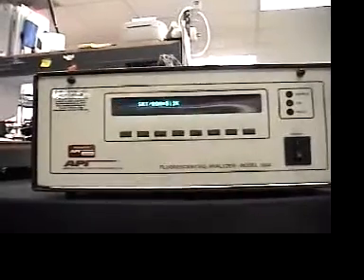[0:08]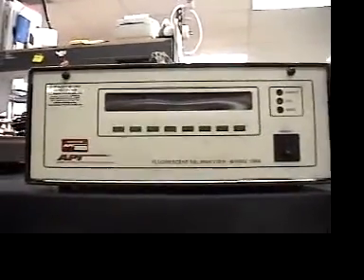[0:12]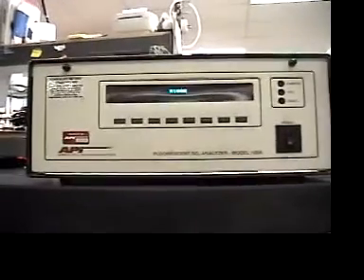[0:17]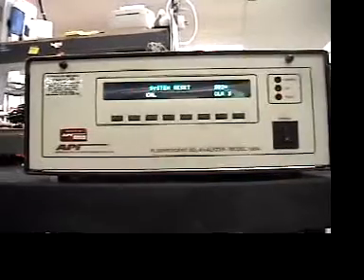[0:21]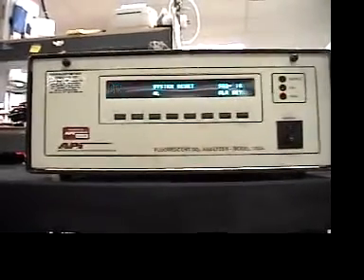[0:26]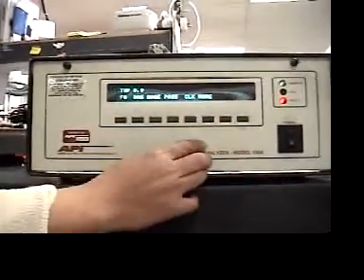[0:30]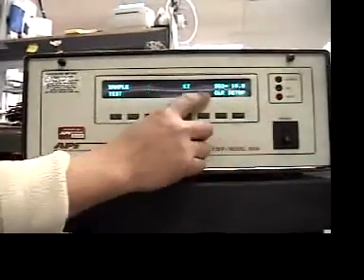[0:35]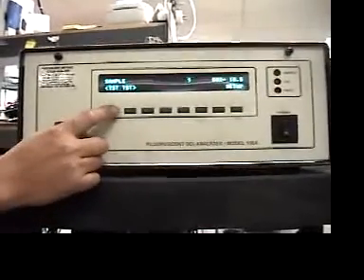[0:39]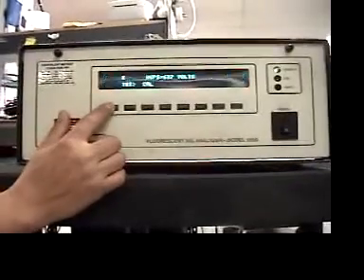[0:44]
Okay, so we just turned the unit on. It goes through its startup stuff. We just set up, now we put it to default, so we just clear and see what happens. This button goes circle around. Right, circle through.
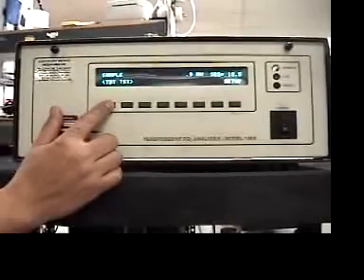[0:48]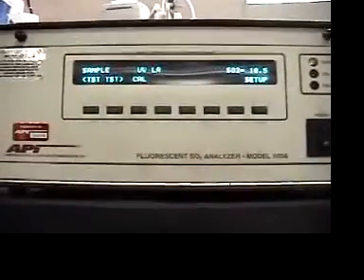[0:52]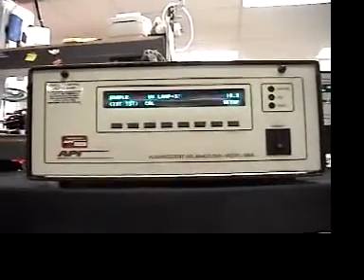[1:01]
Okay, so that's a UV lamp. When it gets under 1,000 or so, that's when you want to think about replacing it, correct? All right, good. So now you're going to show me how we remove, replace, and adjust the lamp, correct? All right, very good.
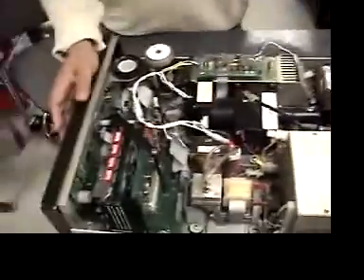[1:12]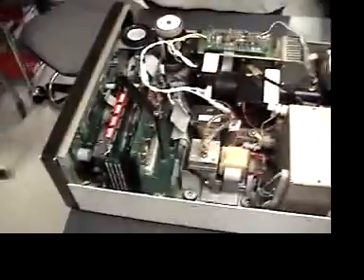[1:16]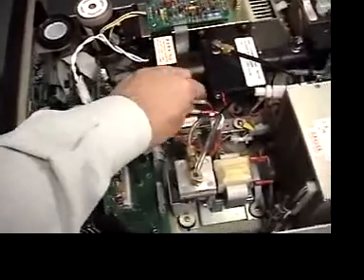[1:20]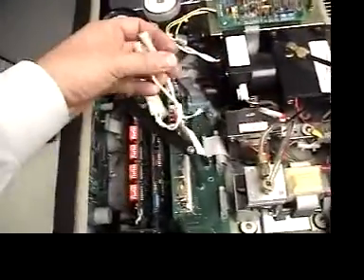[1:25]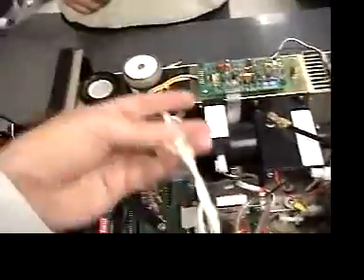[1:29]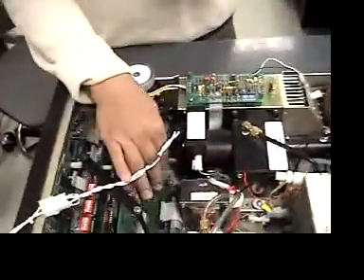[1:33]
Step number 1, unplug the unit from AC power. Step number 2, remove the top cover. Step number 3, unplug this connector, the UV lamp connector. Is it marked in a certain way? Okay, I think it's obvious. So we want to remove that. Very good.
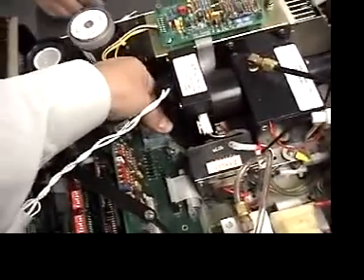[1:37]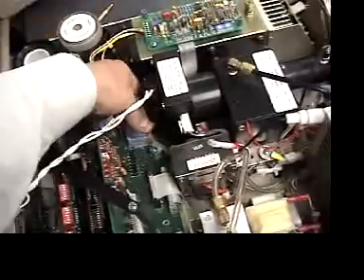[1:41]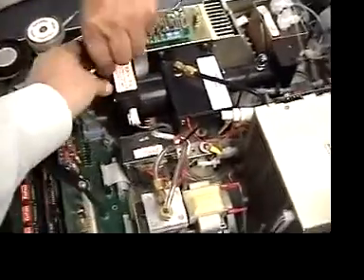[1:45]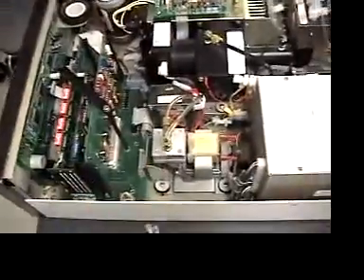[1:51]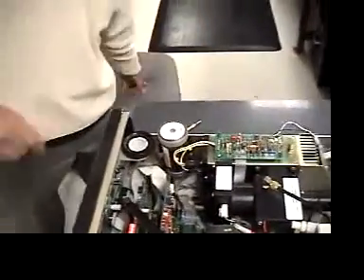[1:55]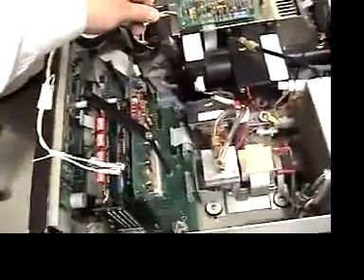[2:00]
Now we loosen the thumb screw down here. Just loose, that's good. Then we pull the lamp up. Very good. So now that's the old lamp. Now we put a new lamp in. Here's a new lamp. We put that in.
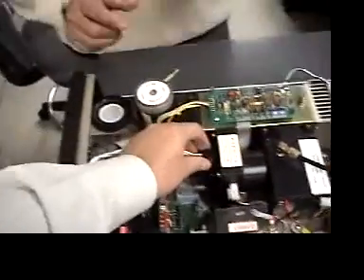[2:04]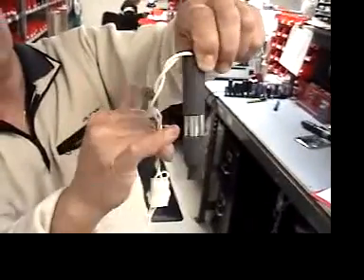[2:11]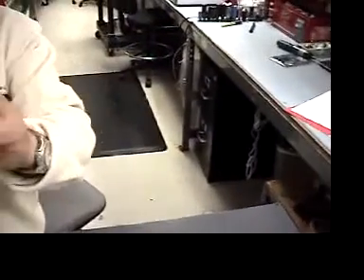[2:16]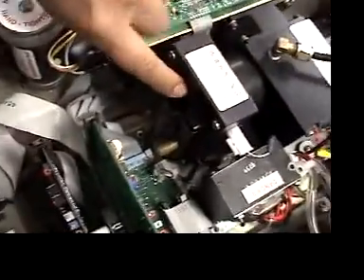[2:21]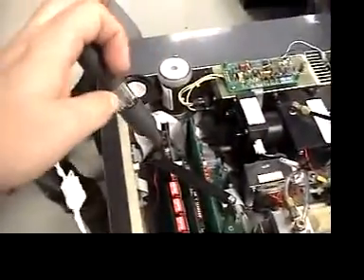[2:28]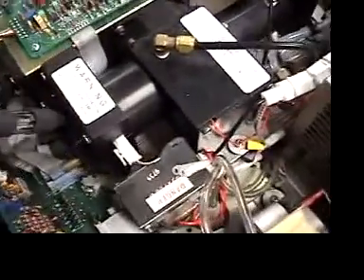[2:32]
Is there any particular orientation? Yes, you see the window for the lamp. It's right there. There's a window on two sides, back side and front side. We make sure the window is aligned. So we've got to align the window of the lamp with the window inside of the unit. That looks good.
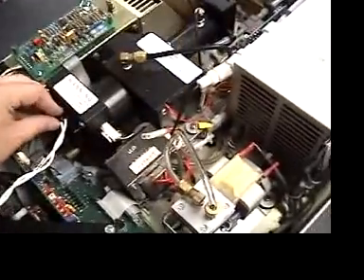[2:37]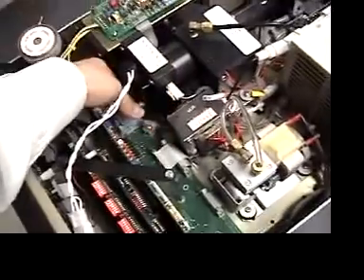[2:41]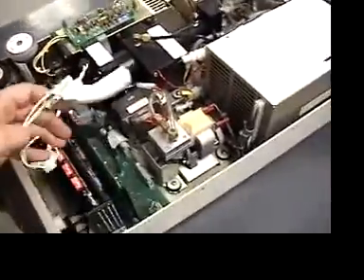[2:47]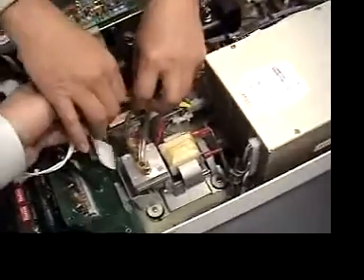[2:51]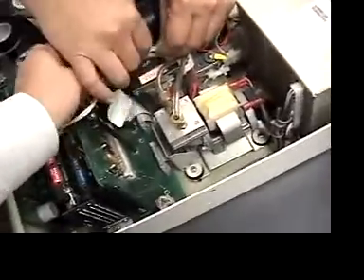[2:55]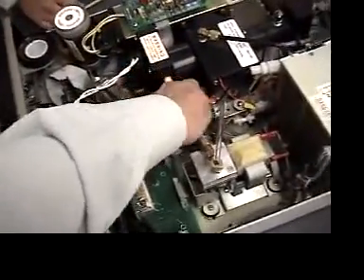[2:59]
Now we tighten the thumb screw. Just not too tight, just finger tight. Very good. Now we reconnect this connector. Does this go any particular way? It doesn't matter, it goes either way. No orientation on that connector. Very good. Now we reconnect the AC power.
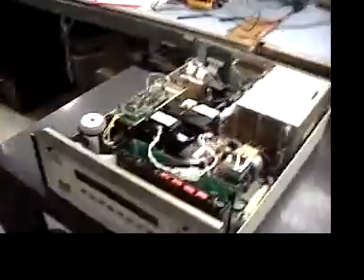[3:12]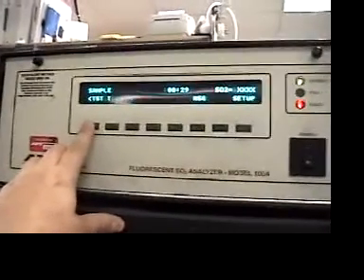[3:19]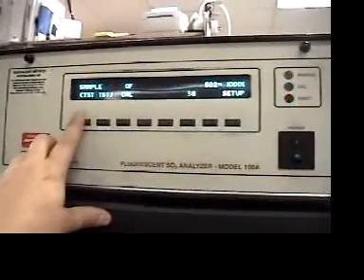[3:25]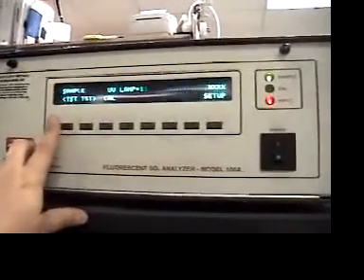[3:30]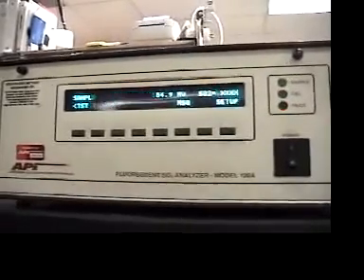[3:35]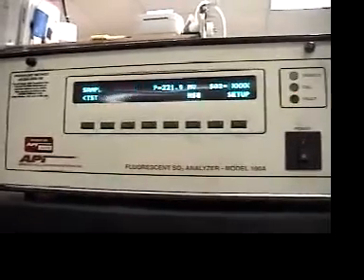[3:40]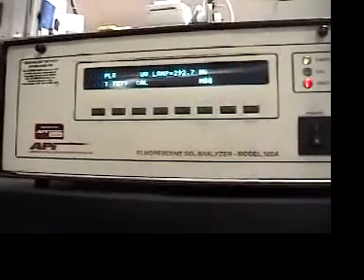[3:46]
Now we turn the unit back on. Now we circle through the test menu and we look for the UV lamp. Right there. Right now it's reading 120 or 140 millivolts and it's increasing, so the lamp is warming up. How long does it usually take for the lamp to warm up? Probably 5 to 10 minutes.
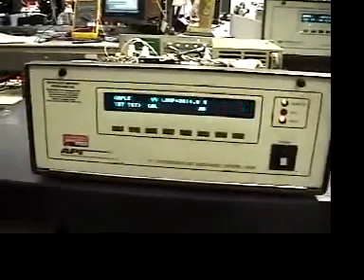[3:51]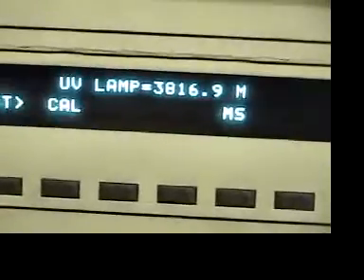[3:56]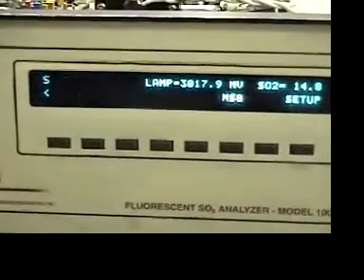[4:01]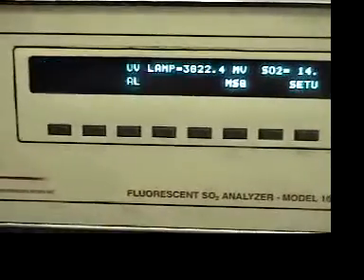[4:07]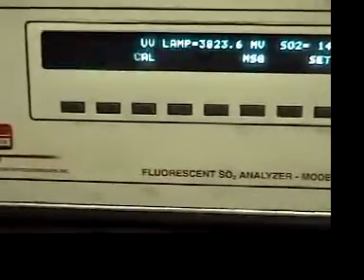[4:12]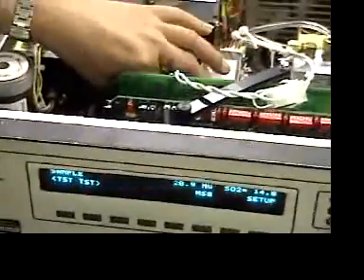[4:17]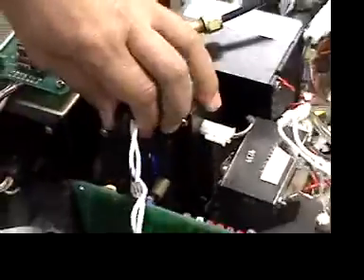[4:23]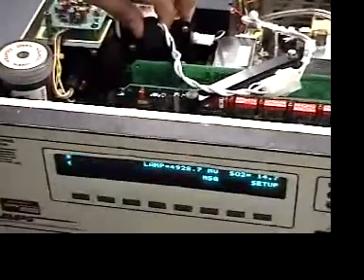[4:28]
After approximately 10 minutes or so, the UV lamp will be stable and warmed up. So what we want to do is adjust the UV lamp position to reach as high a signal as you can, the maximum possible signal. Loosen the thumb screw slightly and move the UV lamp around, up and down, side to side, to get the max.
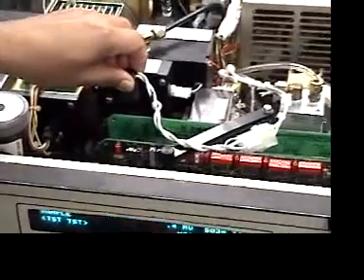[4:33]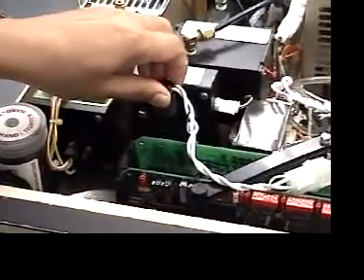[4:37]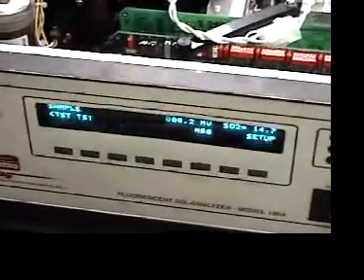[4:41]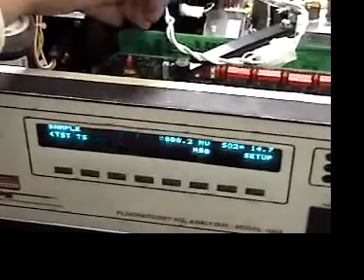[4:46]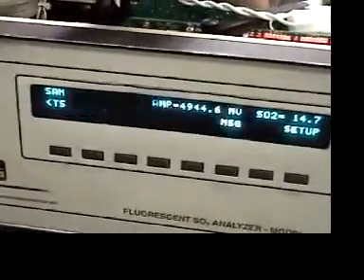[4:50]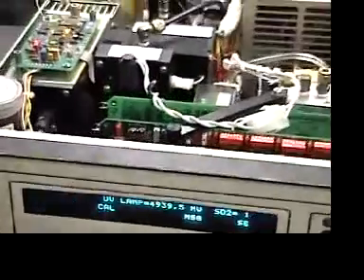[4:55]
Be careful not to expose your eyes to the UV lamp itself because that is harmful radiation. Then move it around and notice when the lamp is at the maximum level, and then tighten it down. You can see we started at 3,000 millivolts and now we're up to about 5,000 millivolts, a 5-volt signal coming out of the UV lamp. Very good.
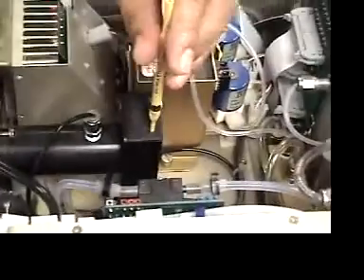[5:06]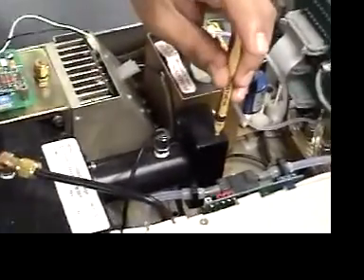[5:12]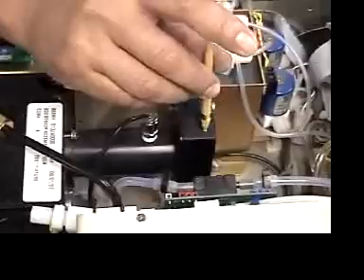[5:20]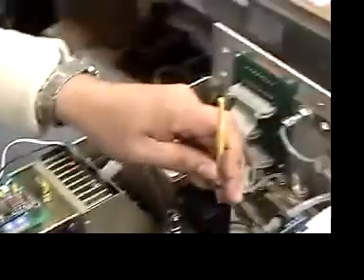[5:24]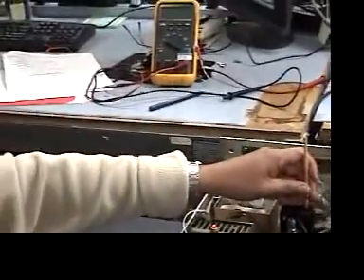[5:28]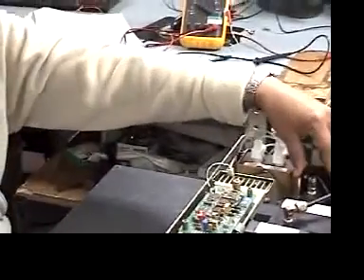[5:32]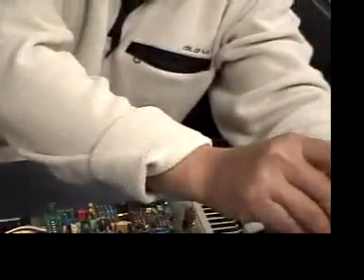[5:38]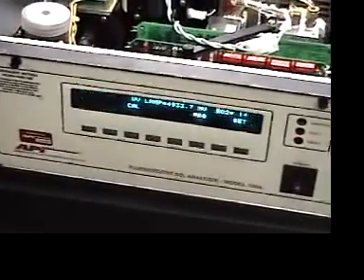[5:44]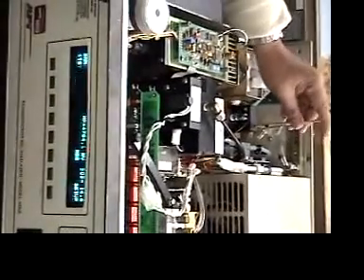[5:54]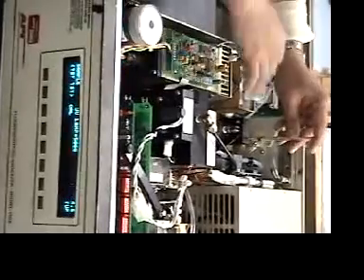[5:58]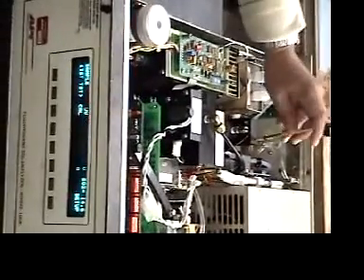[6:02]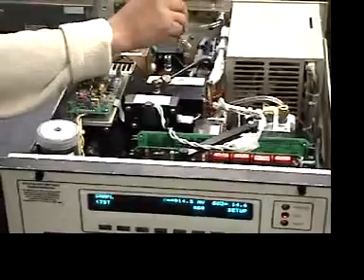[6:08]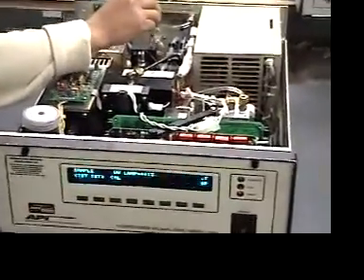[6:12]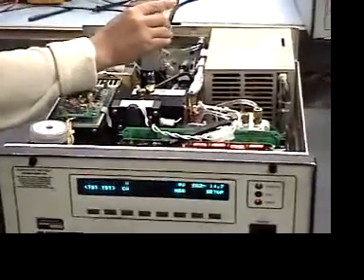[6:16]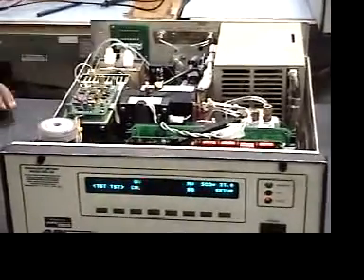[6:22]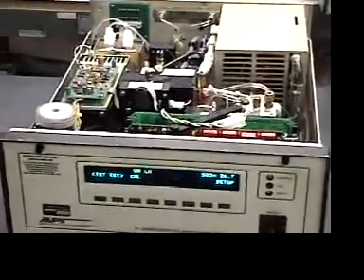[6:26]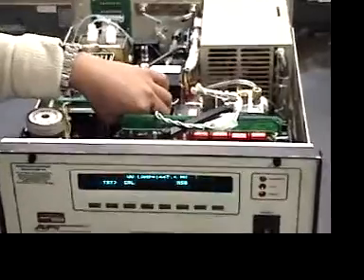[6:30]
Then after that you can adjust the detector part. I gotta lower this one to minimum. Then we try to adjust it and maximize again. You try to maximize again by making that adjustment. I got max on that one. Now I can adjust the lamp again, maybe I get more max on that.
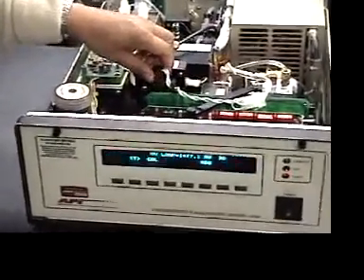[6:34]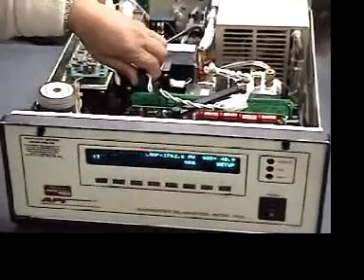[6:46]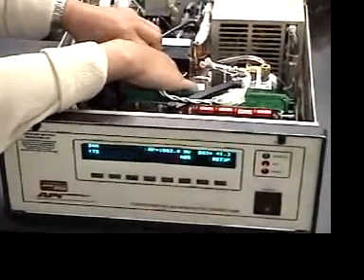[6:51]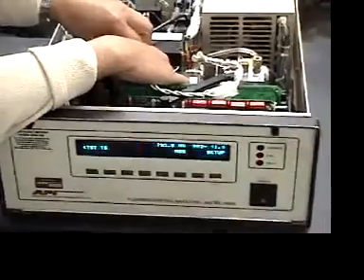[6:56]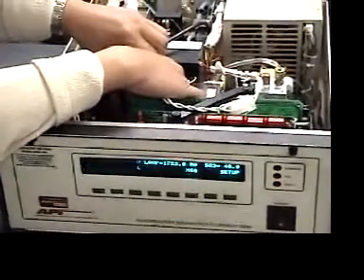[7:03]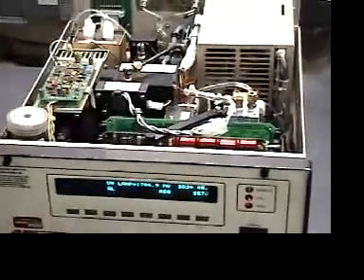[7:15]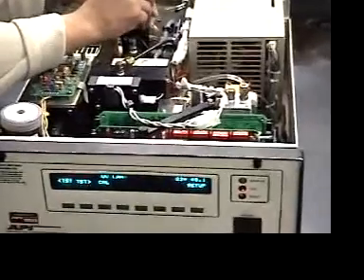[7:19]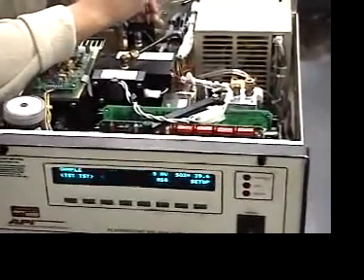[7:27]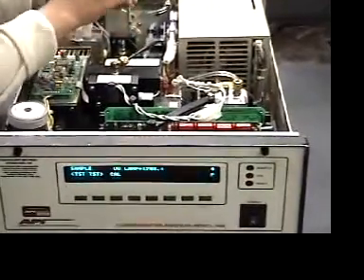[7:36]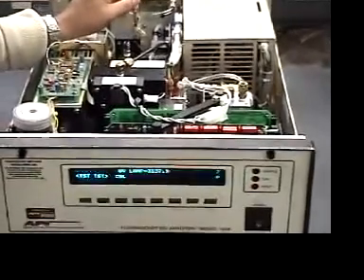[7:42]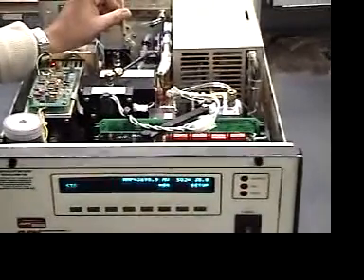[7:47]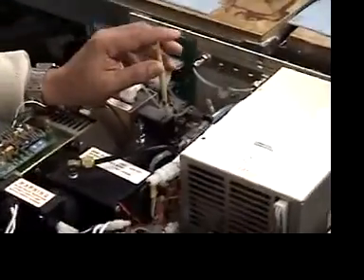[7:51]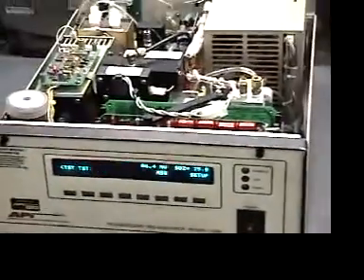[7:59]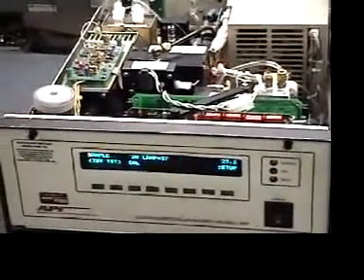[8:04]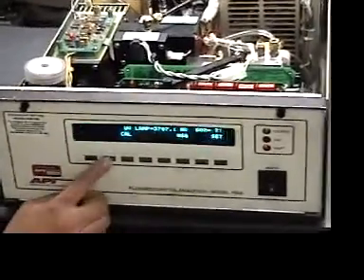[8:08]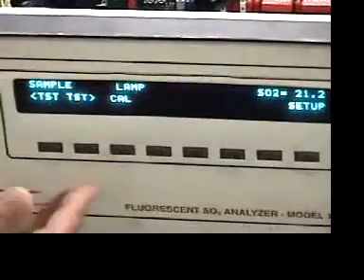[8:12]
That's 1800. I leave it at probably 3,700. Is 3,700 a good number? Yeah, it's a pretty good number. Okay, excellent. And after that, we can calibrate the ratio. This one should be 100%. Right now it's at 106%.
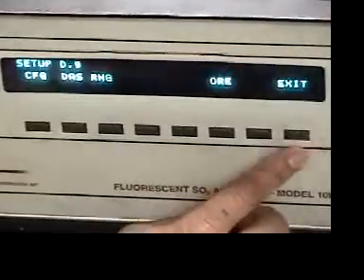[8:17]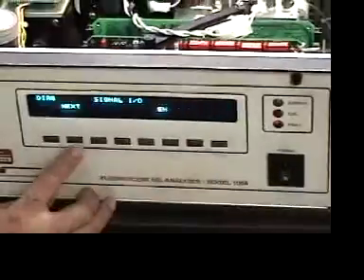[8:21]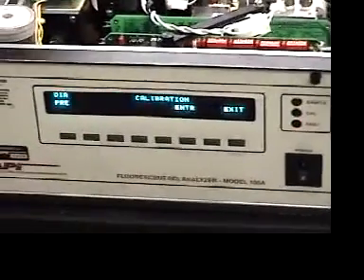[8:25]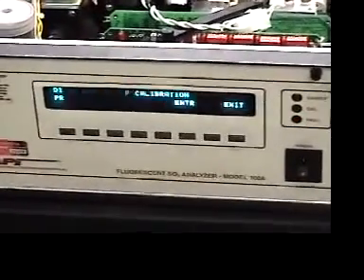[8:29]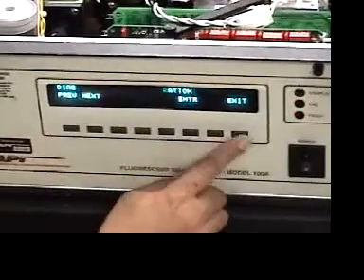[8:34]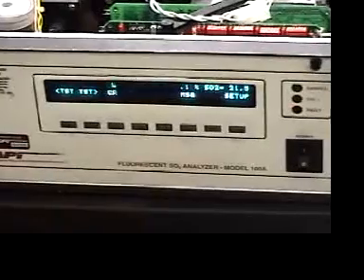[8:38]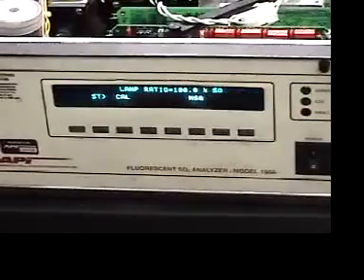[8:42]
We're going to calibrate the lamp. Every time you move the lamp, you have to calibrate the lamp. Okay, very good. Just put it in and exit out. Now you've got the ratio at 100%. Perfect.
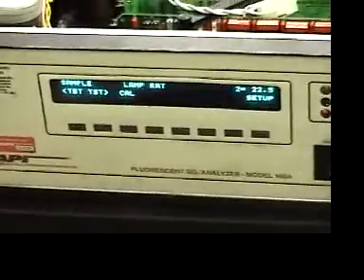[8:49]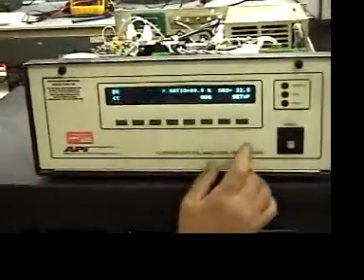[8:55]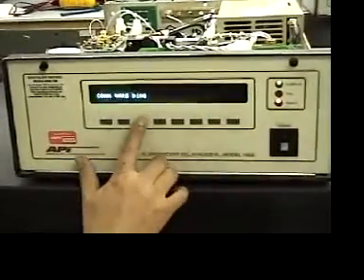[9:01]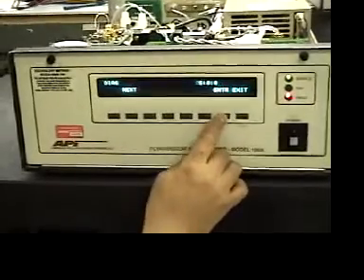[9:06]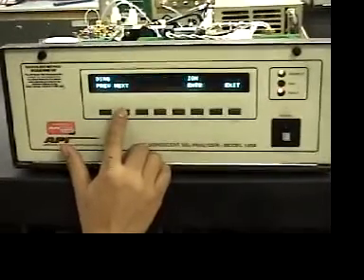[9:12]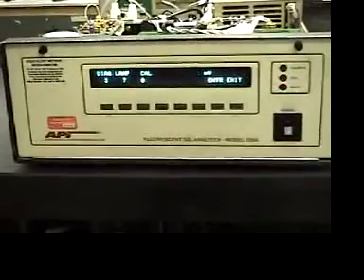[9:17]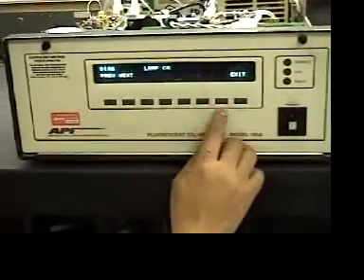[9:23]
We're going to show the process to calibrate the lamp once everything is done. Please demonstrate the lamp calibration procedure. Setup, Diagnostic, Enter. Just keep scrolling until you see lamp calibration, and press Enter. Then you see the value of the lamp. That's what you're supposed to get. Just put it in there and exit out.
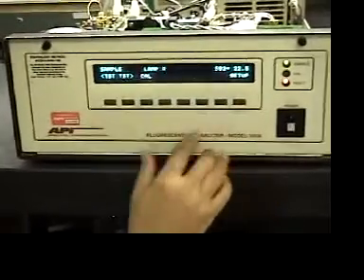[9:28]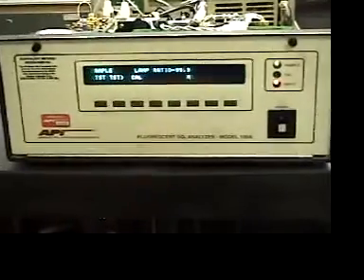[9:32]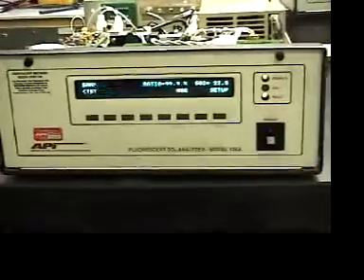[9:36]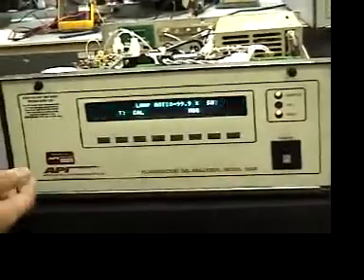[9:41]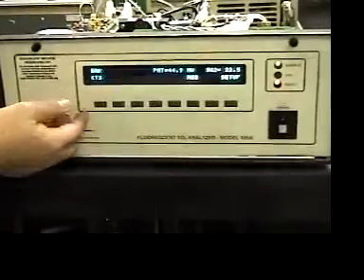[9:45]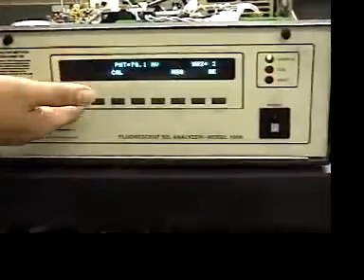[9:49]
You see the lamp is about that, and the ratio is about 100%. Then you're done. You don't need to exit, it'll just test the button. Now you can calibrate, put the gas on and the PMT. I see. Calibrate it. Very good. Thank you.
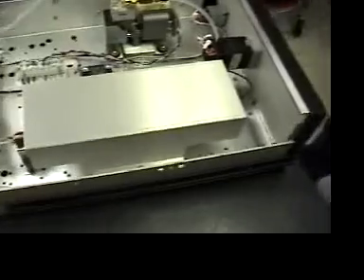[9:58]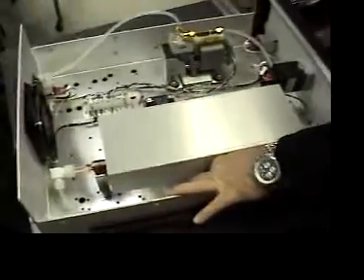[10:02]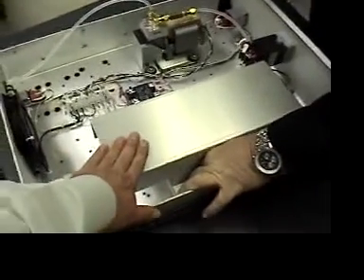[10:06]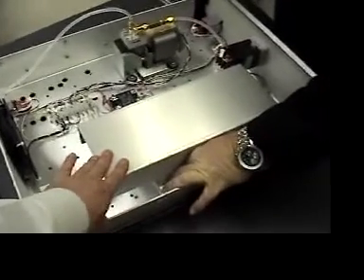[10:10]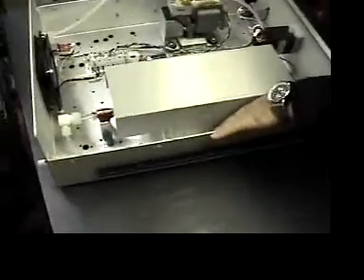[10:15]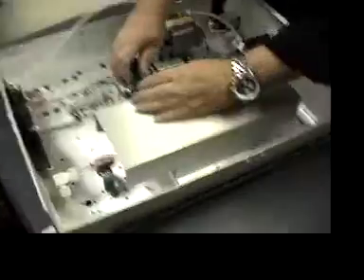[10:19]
So we do everything we did before: remove the top cover, remove the AC, loosen the bolts, allow the unit to cool down. This will be very hot initially. There is a hazard of a burn, so you should let it cool down for a good 30 minutes to make sure that there are no hot temperatures inside the unit, and make sure again the unit is unplugged from AC power.
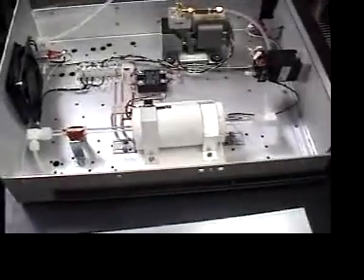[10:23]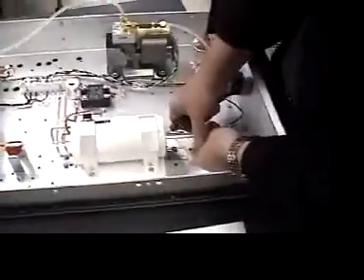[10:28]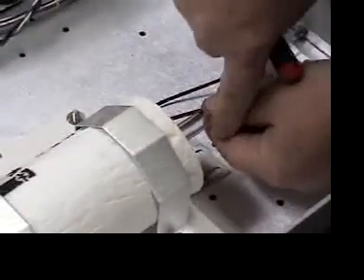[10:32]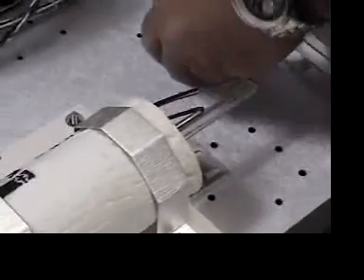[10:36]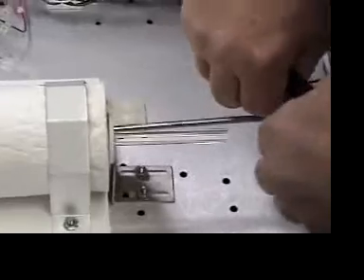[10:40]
So now we've gained access to the thermocouple. We go ahead and loosen the fittings on the glass tube carefully. Touch this gingerly, it could be hot. Make sure again the unit is cooled down properly. We remove the old thermocouple. Again, it'll be hot.
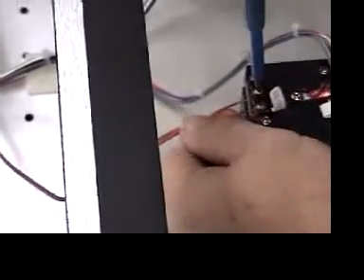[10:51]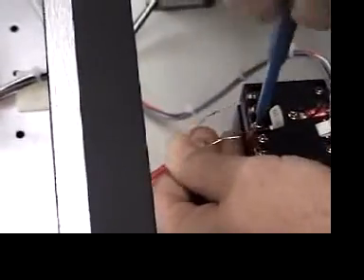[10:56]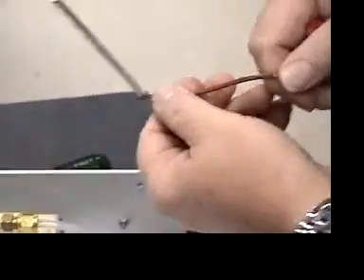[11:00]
We unscrew the screws. Notice the colors: red and orange. If it's not red and orange, it's the wrong thermocouple. We need red and orange.
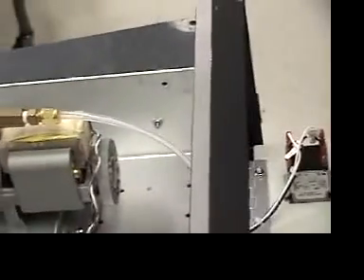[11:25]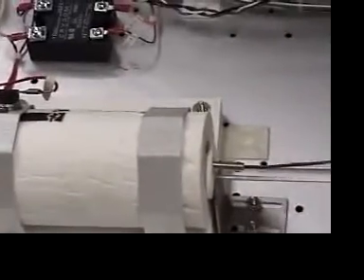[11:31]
Now understand, we've upgraded the thermocouples in the units we have. They had another kind, and so they will be putting back in red and orange. So we're going to put in the new and improved thermocouple, which is red and orange. In some cases, we'll have to actually update the hot dog tube as well. Some of the hot dog tubes will not accept the new thermocouple. In most cases, it'll slide right in.
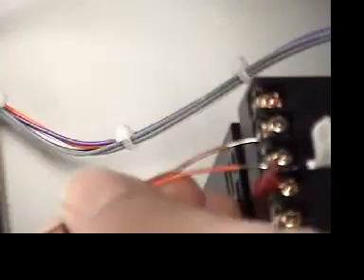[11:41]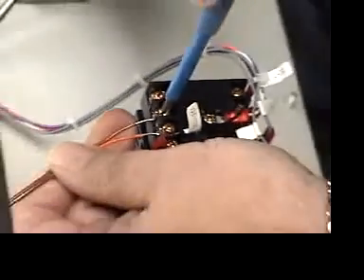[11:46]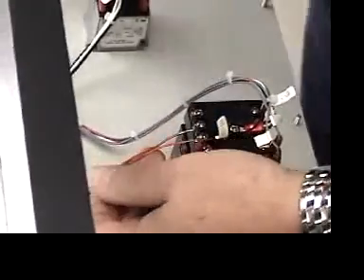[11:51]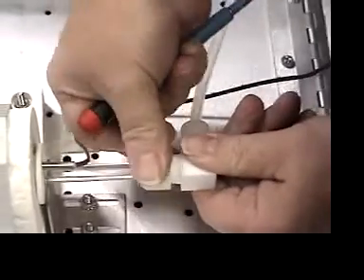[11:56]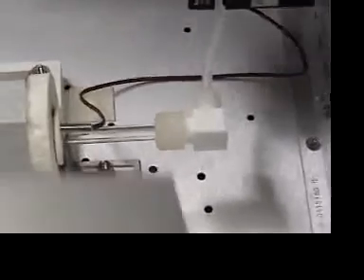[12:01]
We go ahead and carefully, again, note the colors of what's going in there, and properly make the connection to the terminal blocks on the temperature controller. Reinsert the tube, connections, fittings. Careful not to over tighten. And put the cover back on. Put the nuts back on. The 3 nuts.
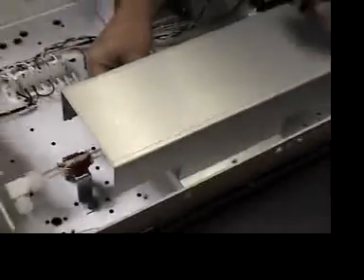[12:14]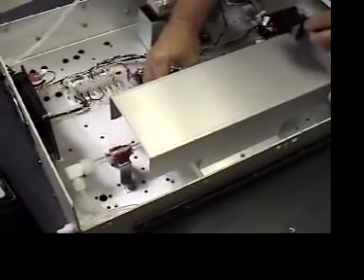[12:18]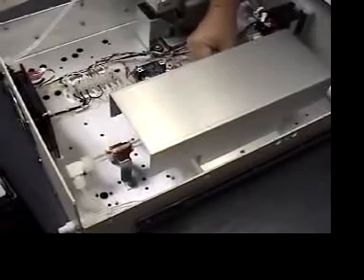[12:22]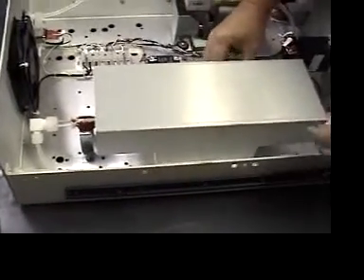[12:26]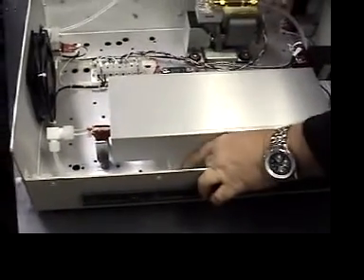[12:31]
And then of course you need to go in and initialize the temperature controller for the new thermocouple if you are making that thermocouple upgrade.
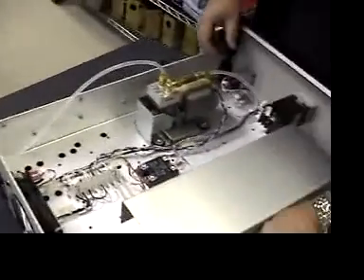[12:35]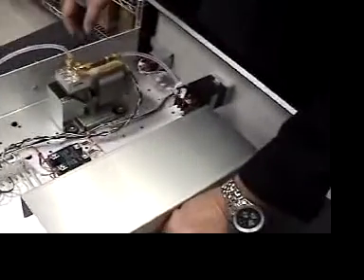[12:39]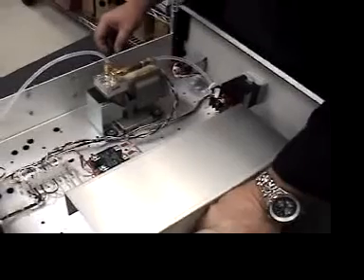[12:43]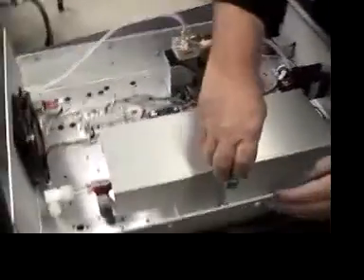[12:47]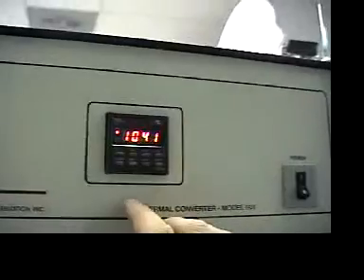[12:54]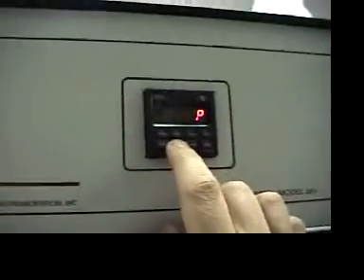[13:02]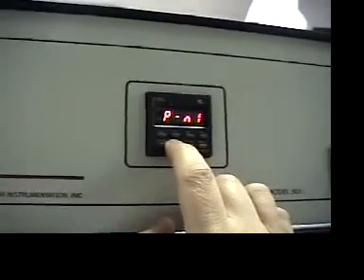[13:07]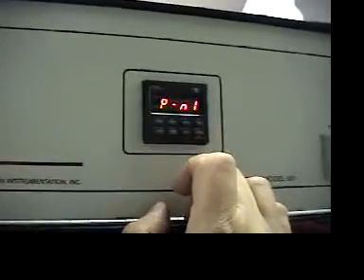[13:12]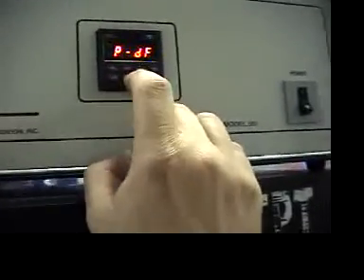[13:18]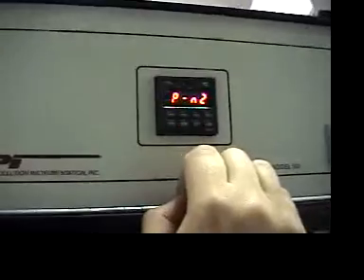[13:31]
Okay, so the very first step is to press the select button, and then you hold it down until PN2 is displayed. Is that correct? PN2? No, it's PN1. Oh, PN1 is displayed. Hold it down... no, it says PN2. Well, press it again. Now you have to press it again and hold it down. Okay, PN2. Now we hold that.
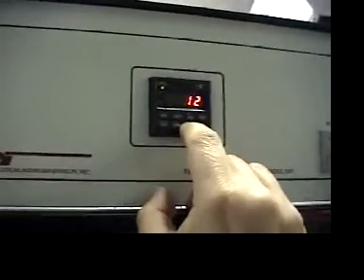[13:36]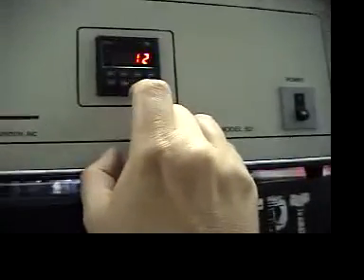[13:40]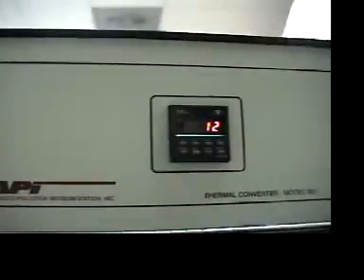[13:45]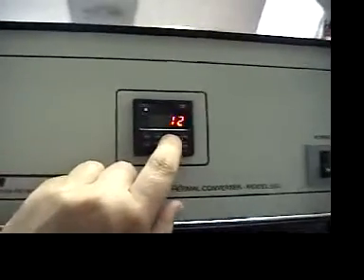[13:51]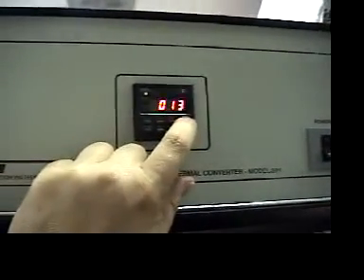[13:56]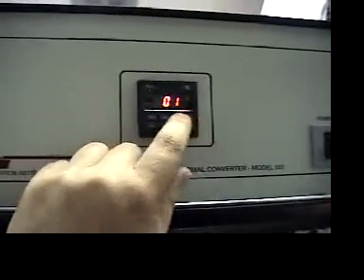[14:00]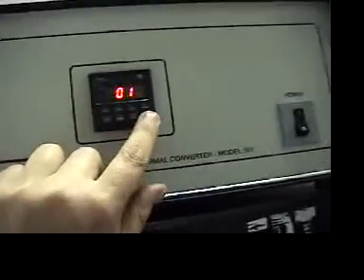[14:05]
Now we press the data key over here. Press data. And we want to change that to read 3. No, well, it's from 3 to 12. Oh, change from 3 to 12. Okay. So if it were not reading that, you could go over here. And then we press enter, correct? Correct.
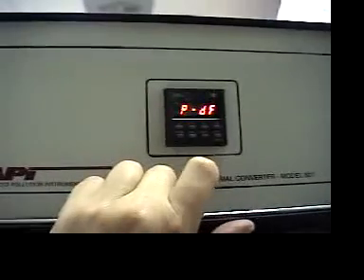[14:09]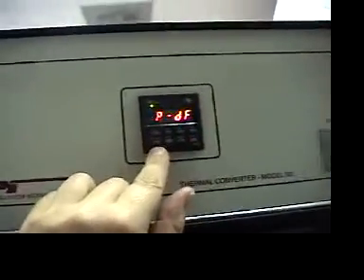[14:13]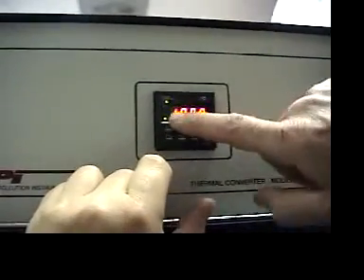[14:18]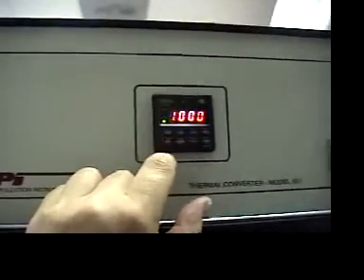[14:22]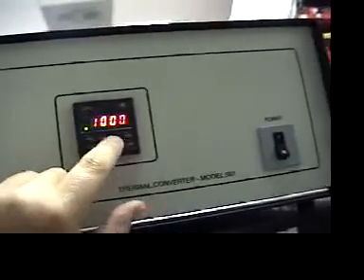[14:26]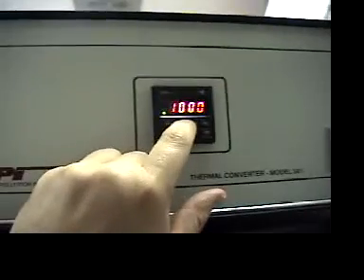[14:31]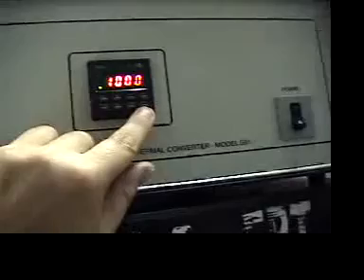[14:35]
And now if you want to get back to the front panel. Now to get back to the front panel menu, we press present value, set value. Very good. That's the set value. Yes. This is the present value, the process variable. So if we want to adjust the set value, not that we want to adjust it, but for this thing it should be set at 1,000. We could set it higher, but we're not going to set it any higher. And then we press enter. Correct. And then we're done.
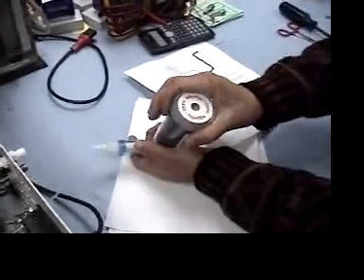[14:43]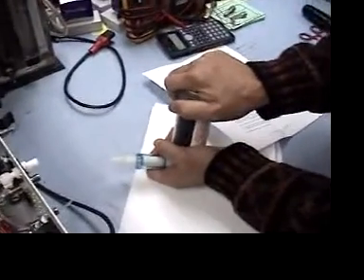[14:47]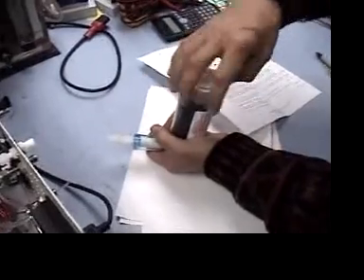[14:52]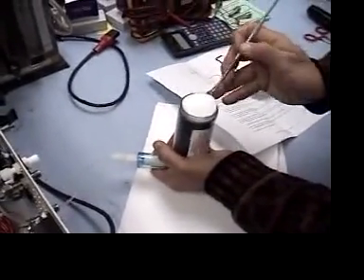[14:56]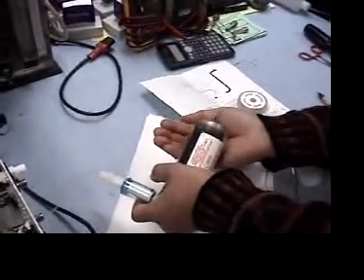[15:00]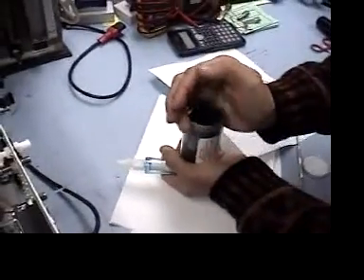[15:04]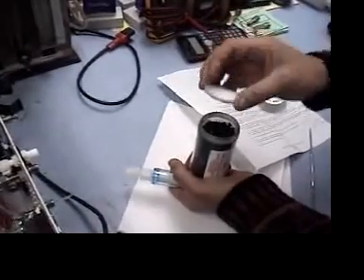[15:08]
Okay, so what we're going to show is how to replace the activated charcoal within the filter. The reason we have this charcoal is to scrub the air which is used for oxygenating the sample. We've got to remove all sulfur compounds from the air, so as not to deteriorate the accuracy of the measurement from the sample gas.
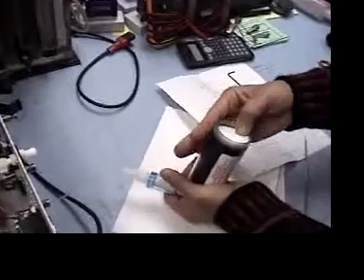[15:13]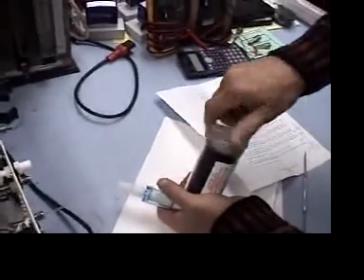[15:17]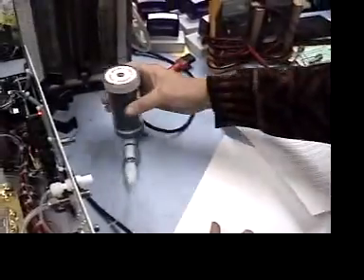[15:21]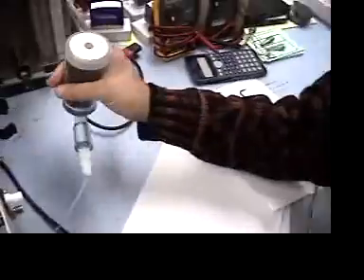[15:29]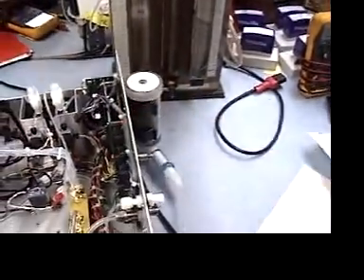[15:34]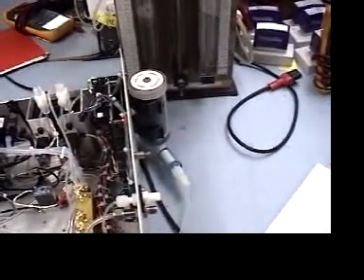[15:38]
So what we want to do periodically, based on a service interval of about a year to 2, depending on how contaminated your air is, is remove that, empty out the previous charcoal and put in the new charcoal. And a little trick of the trade: if you shake that and you can hear it, that lets you know that you need to replace that charcoal, because it will actually be consumed by the contamination within the ambient air that is going in through it.
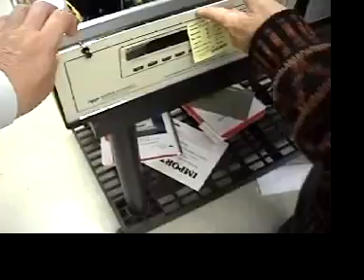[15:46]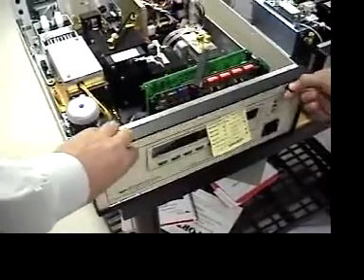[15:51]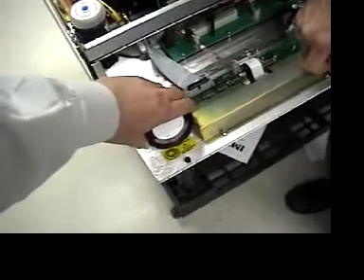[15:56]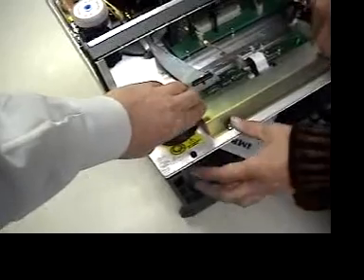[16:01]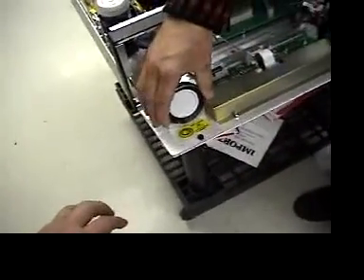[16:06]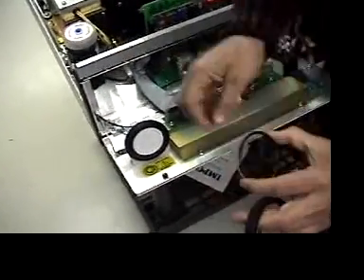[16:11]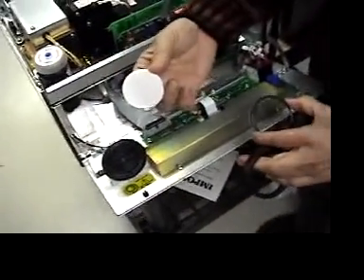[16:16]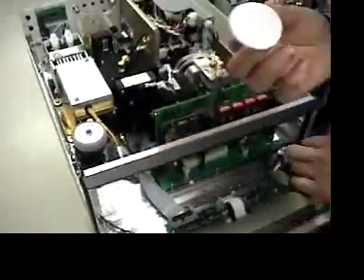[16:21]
Okay, routine maintenance on the filter. We loosen the screws on the front panel, drop the front panel down. We turn the filter holder counterclockwise. We remove the filter holder ring. We check the integrity of the O-ring to make sure that it is sealing properly and does not have excess degradation. We look at the filter and make sure it is fairly clean, without excessive debris or contamination.
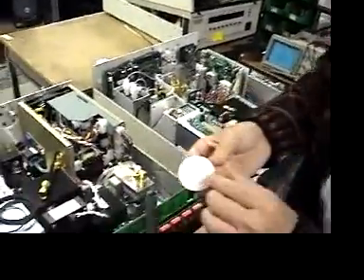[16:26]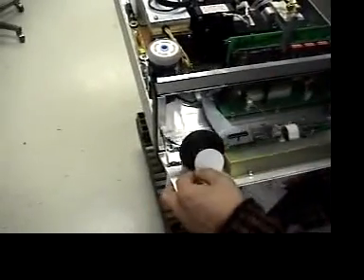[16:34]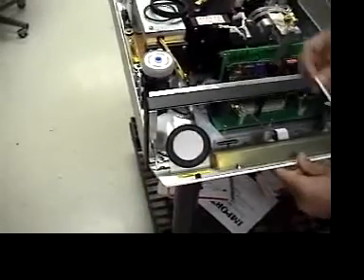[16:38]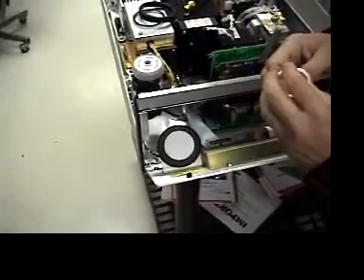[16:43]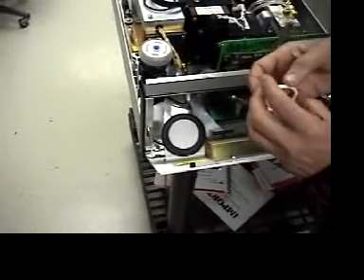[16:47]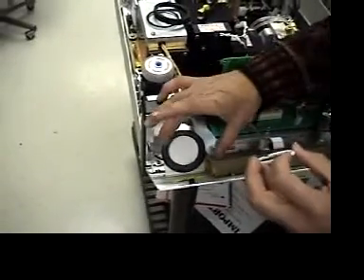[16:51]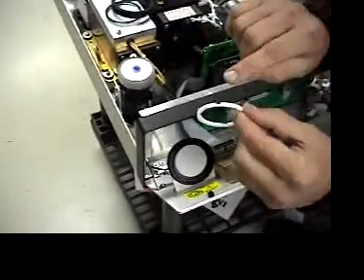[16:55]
If there appears to be debris or contamination, that can affect the measurement integrity, so you must replace it, but replace it only with the Teledyne approved filter material, which in this case is 5 micron pore size Teflon, 47 millimeters diameter.
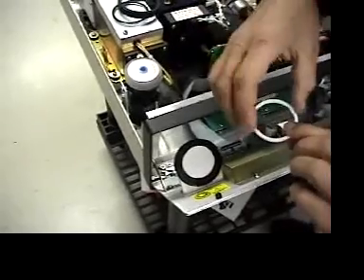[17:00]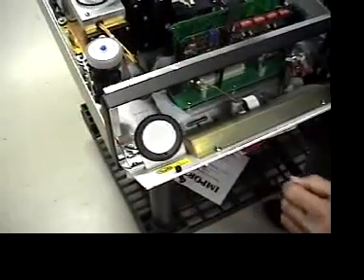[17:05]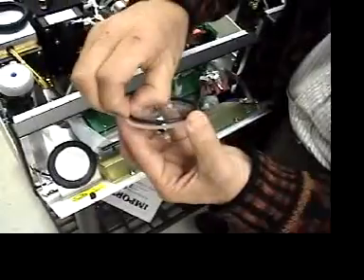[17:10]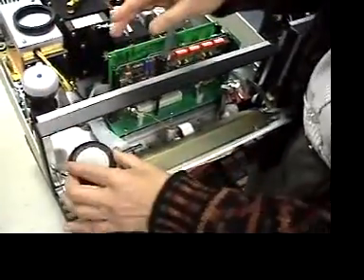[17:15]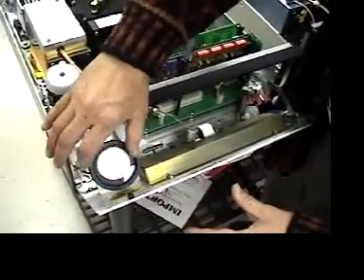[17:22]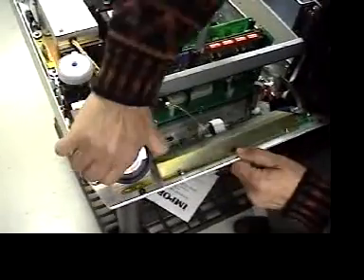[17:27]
Very important, this retaining ring: 2 notches. They must go out. Then, this is a special O-ring. It's designed to crush a little bit more than a standard O-ring, a little more compression than you would normally have. And the window goes on. We reinsert it. It's tight, and then the quarter turn. Finger tight and 1/4 turn, and you're good to go.